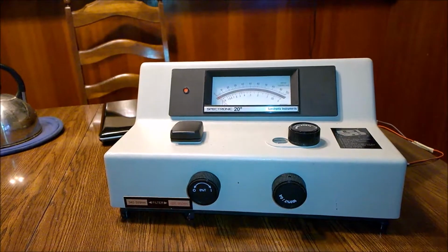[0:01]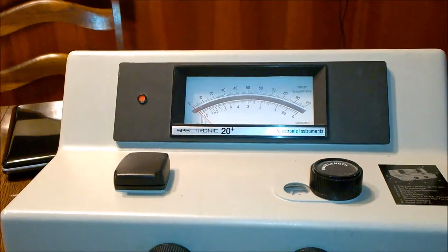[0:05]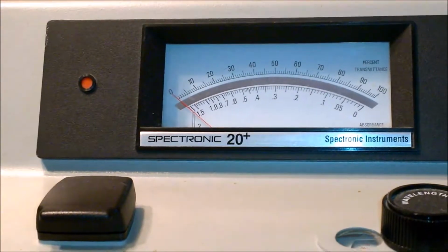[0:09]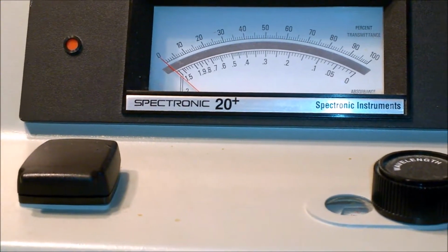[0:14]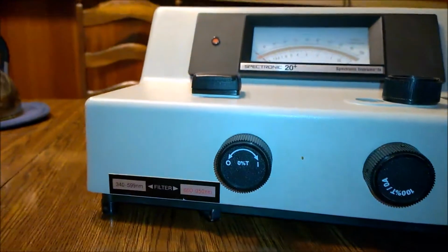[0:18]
Good morning, friend. This is a Spectronic 20 plus spectrophotometer which I got from eBay. This is a used unit and I got it for around $50. And I tested it. It is working.
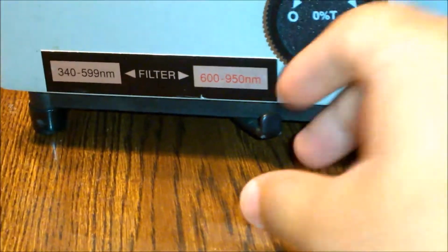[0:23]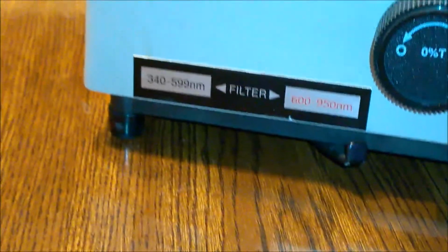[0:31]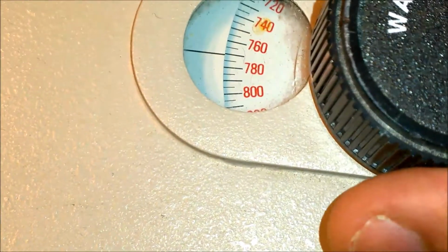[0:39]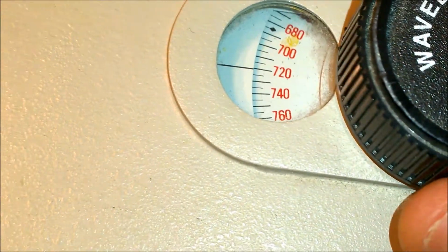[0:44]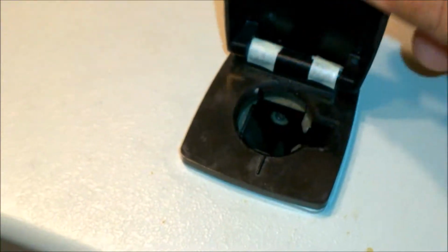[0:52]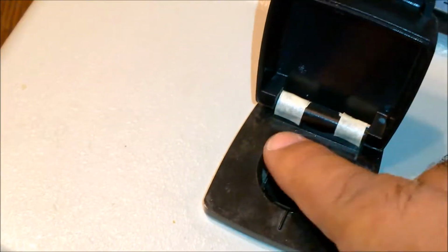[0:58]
It has two filters here for blue and UV region, and then red and near infrared region. It has another filter. It has a wavelength knob here. Here, these wavelengths, you can set wavelength within 5 nanometers, and this is where you put your sample in. This cover of the sample holder was broken, which I fixed with tapes and some glue.
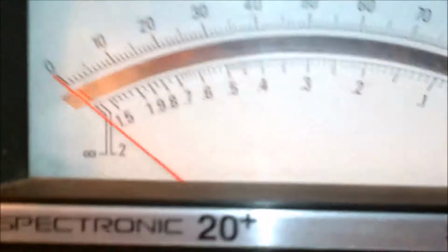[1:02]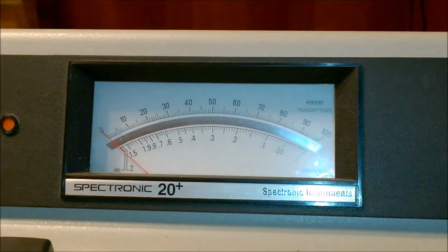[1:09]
And this is the readout here. Here you can read the absorption or the percentage transmittance.
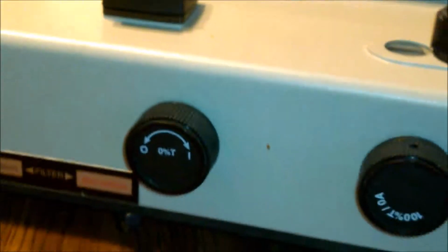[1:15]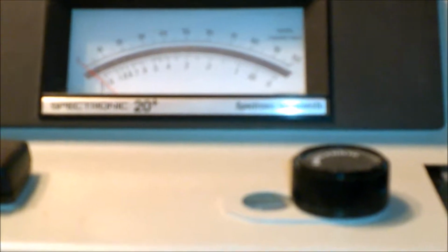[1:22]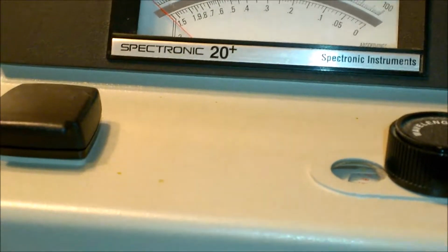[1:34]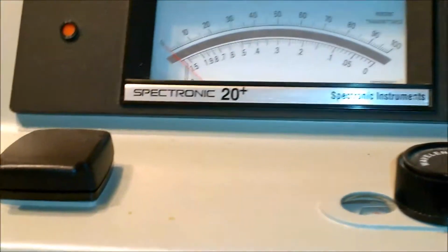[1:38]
I'm sure there are several videos which demonstrate how to use the Spectronic 20 plus spectrophotometer and its application. But what I'm going to show you in this video is how simple it is to convert this analog readout here to a digital reading using Arduino and processing software.
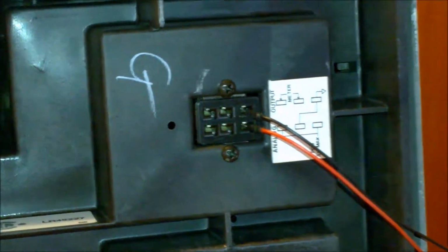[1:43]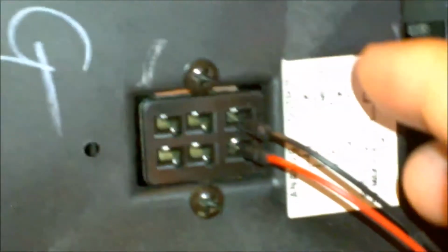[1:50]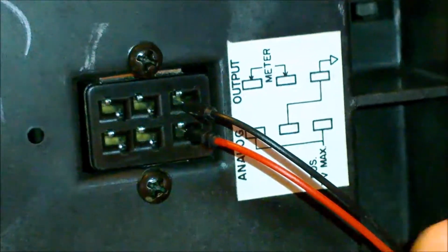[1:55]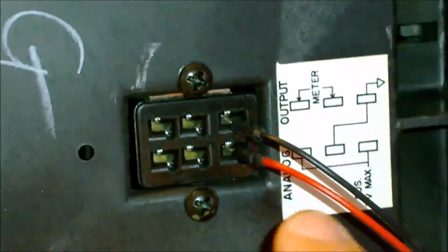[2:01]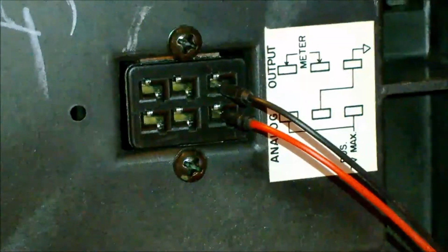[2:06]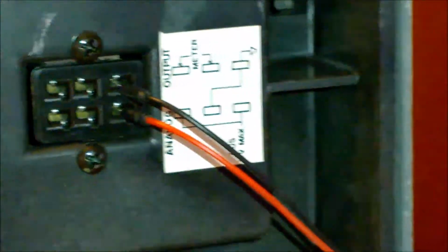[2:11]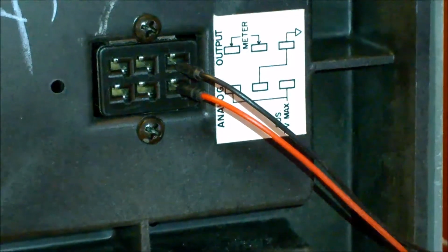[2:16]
If you look under the Spectronic 20 spectrophotometer, you can see that there are some analog outputs, and these are the two pins which I have connected here. This is the ground and this is the analog output. And corresponding to 0 to 100% transmittance, voltage on this output will go from 0 volt to 1 volt. So now it will be a simple matter of reading these voltages and displaying them on a processing software. I'll show you how to do that.
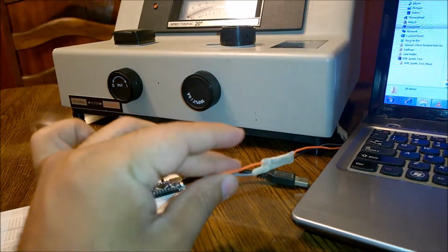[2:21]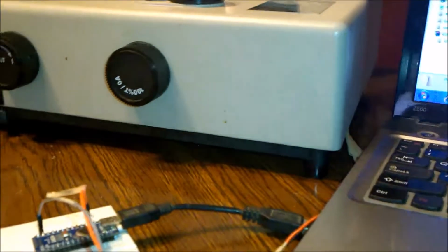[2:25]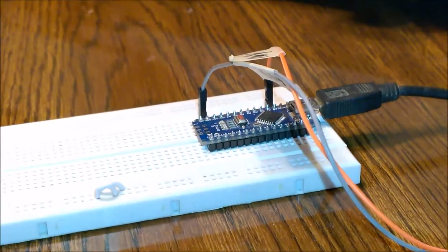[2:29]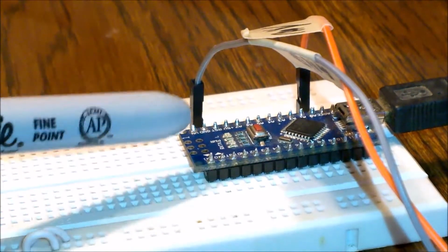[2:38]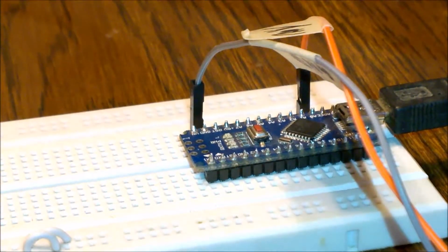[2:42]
So these are the two wires which are coming from the bottom connector on the spectrophotometer. And now these two wires I've connected to my Arduino Nano board. One of these wires is going to the ground pin here, and another wire is going to the analog input channel 0. Now the next step is to program this Arduino Nano to send the analog readings over serial channel, and then we are going to program the processing environment for reading and displaying those analog readings.
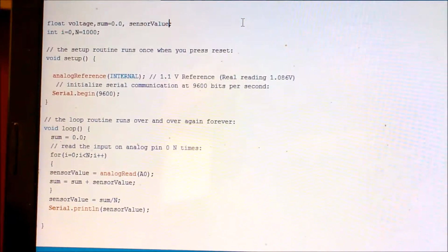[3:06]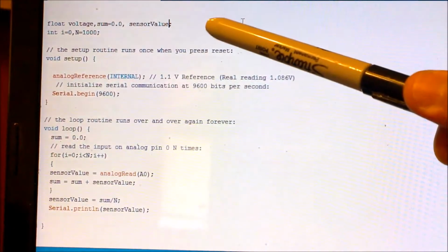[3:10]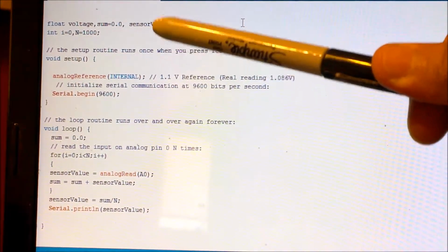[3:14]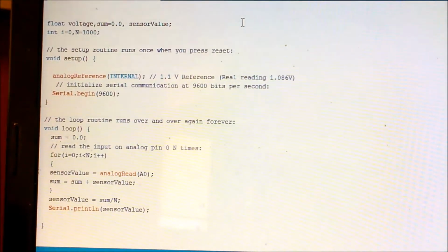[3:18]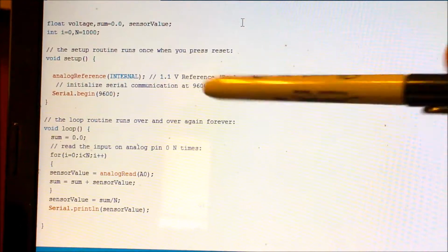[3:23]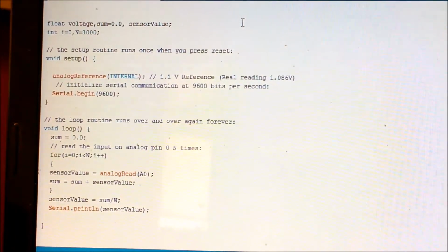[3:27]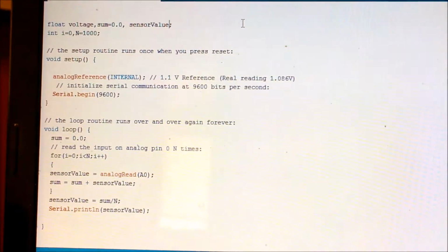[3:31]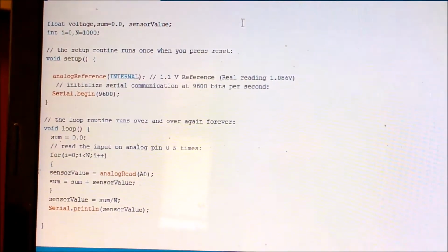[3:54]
So the Arduino code for this program is very, very simple. I just declare my variables here. There is sum, there is sensor value, then there is an integer i and n. The only important thing to notice here is that I have used the analog reference as internal, which gives an internal 1.1 volt reference in the boards which have ATmega328 microcontroller. An advantage of using this internal 1.1 volt reference is that we can get a better resolution than our equipment readout, because there are 100 readings on the equipment readout. That means we can read the percentage transmittance with an accuracy of 1%.
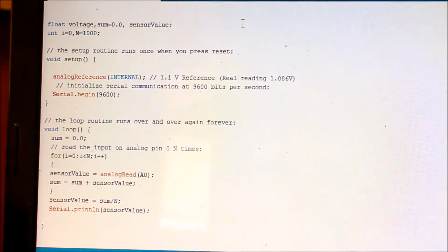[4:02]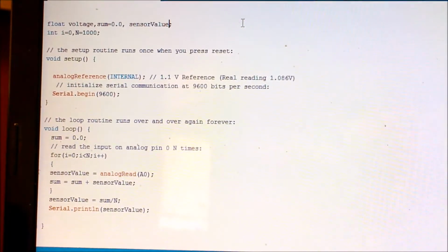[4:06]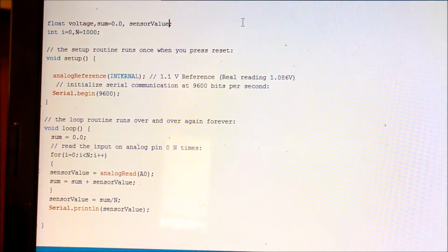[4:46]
But if we digitize it and use it with an Arduino board with internal 1.1 volt reference, what we are doing is the 1 volt is spread across 10 bits. So that means we can get an accuracy of 0.1%. So that's why this internal reference is used here. If you have still not understood it, I am giving a link to my previous video where I have explained how we can increase the resolution of Arduino ADC by using internal voltage reference. Then there is loop. I'm reading the voltages 1000 times, averaging them, and then sending them over to the computer. So next I'm going to show the processing code.
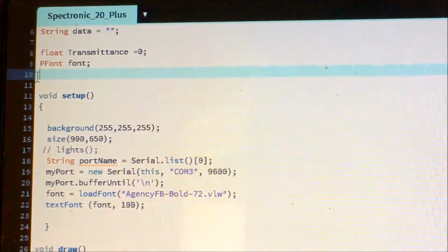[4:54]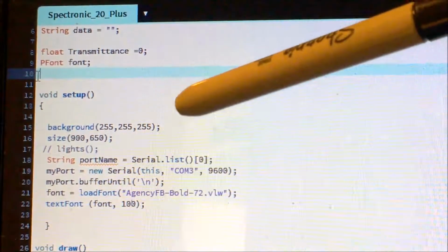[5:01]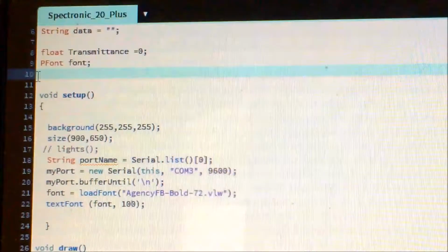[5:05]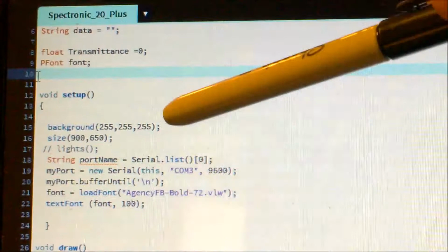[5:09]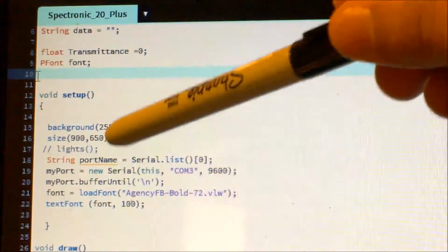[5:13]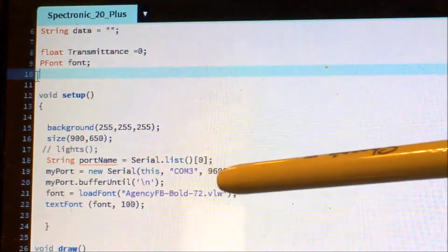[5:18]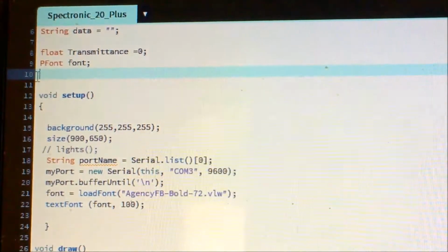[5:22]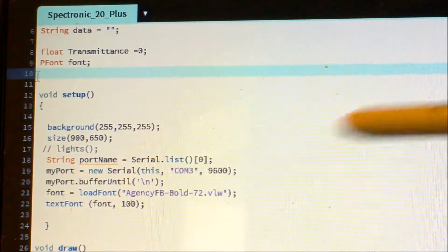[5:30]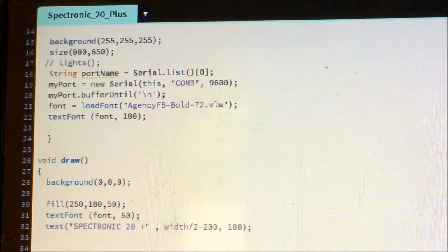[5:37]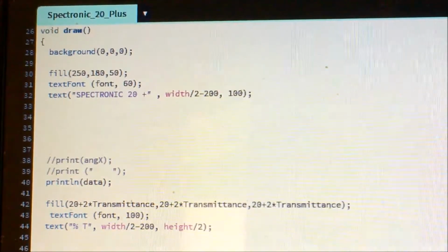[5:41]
So here is the processing code. I'm declaring some variables up here. And just like Arduino code, we have a void setup and void draw in place of void loop. In the setup, I'm just setting the background to white and the size of my window. And then here I used COM3. So you have to make a change in this code and put the port name on which you have connected your Arduino. Then here is the font I'm using. And I will scroll down. Then I'm drawing it and I'm reading my data and just printing this data.
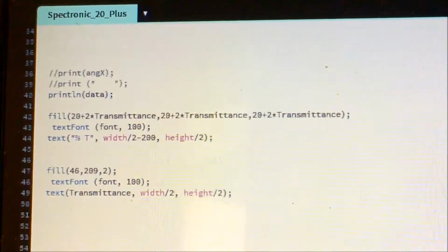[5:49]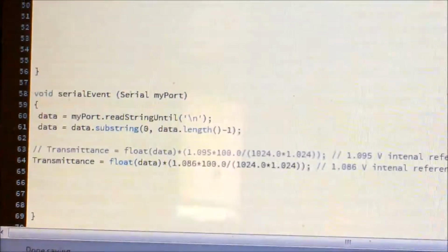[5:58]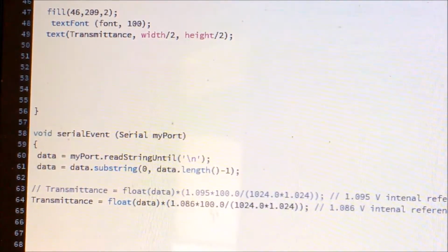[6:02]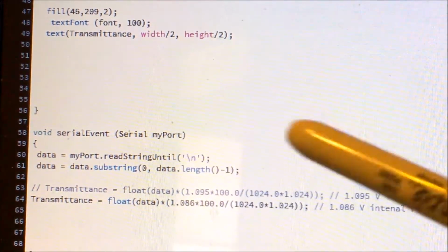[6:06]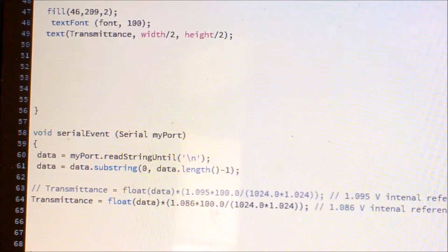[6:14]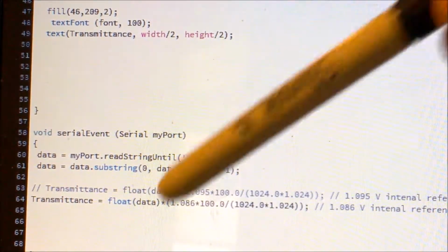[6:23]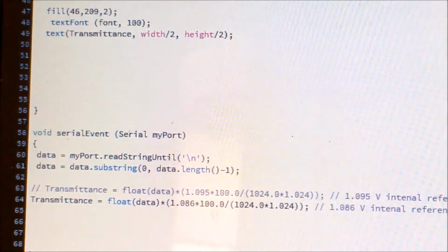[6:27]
The important bit here is how do we read data coming from Arduino and then convert it into numbers here. So read string until there is a new line, then you have to read data just before the new line, and then you have to convert the value in the data using this float function. The data is coming in the form of string, you have to convert that string into float, and then you have to convert that reading into the percentage transmittance.
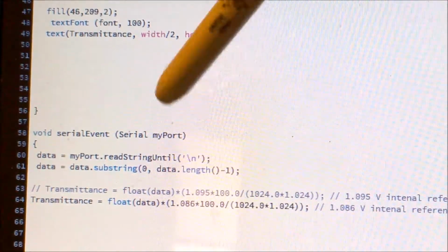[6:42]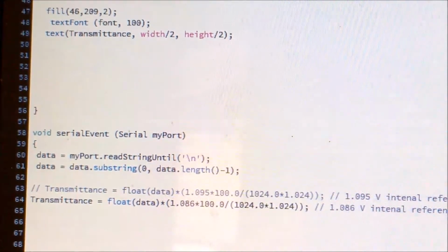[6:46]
As you can see here, this is what I found experimentally. On my Arduino board, when I set internal reference voltage as 1.1 volt, this is not exactly 1.1 volt, but it is 1.086 volt. And then I also found that when Spectronic 20 is having 100% transmittance, it is not giving exactly 1 volt at the output. It is giving 1.024.
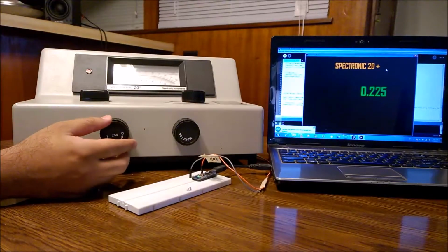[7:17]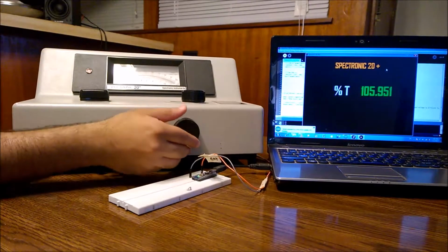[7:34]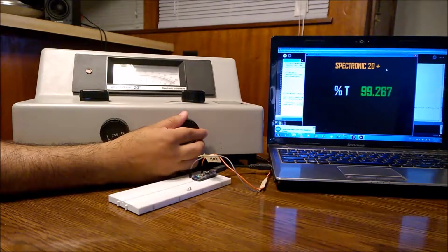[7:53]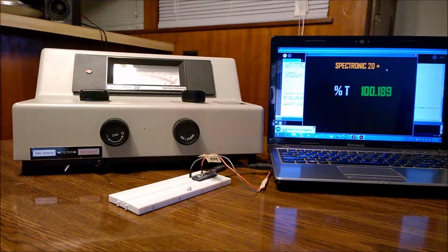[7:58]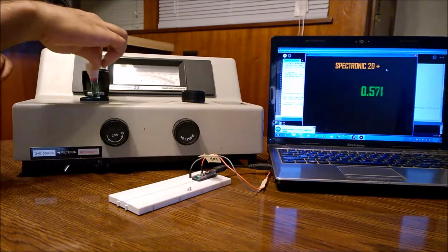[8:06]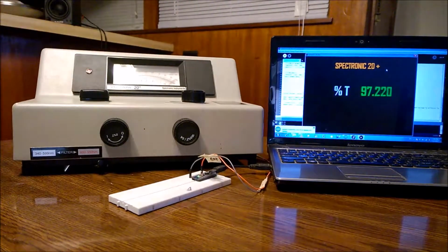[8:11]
Let's see how it looks when it works. It is closed and I can change here and set it to 0. Next, I have to put my blank into it, and now I have to set 100%. It is slightly tricky to set it to 100%, but with a little practice it is possible to do. So now the next step is to put our sample in. We can put our sample in here and we can measure the absolute percentage of transmittance.